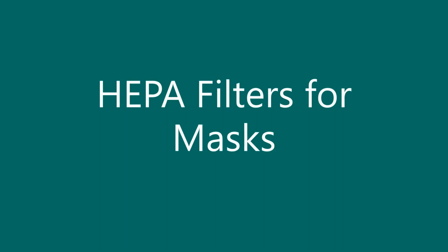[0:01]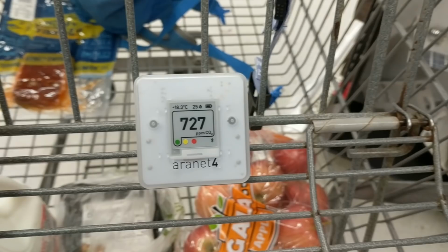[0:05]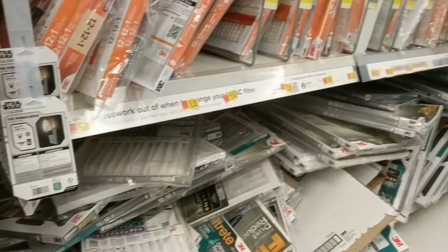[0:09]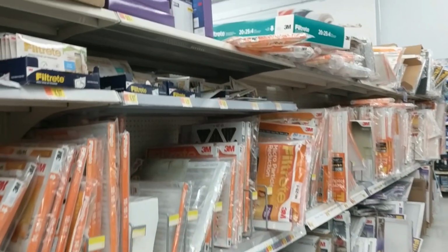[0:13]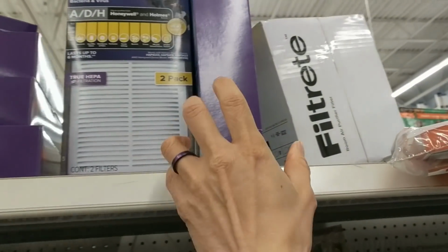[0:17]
I'm at the local big box store and CO2 is at under 800 ppm, which is acceptable. We're on the aisle with the HVAC filters. I am looking for a HEPA filter up here. I'm going to grab the biggest one.
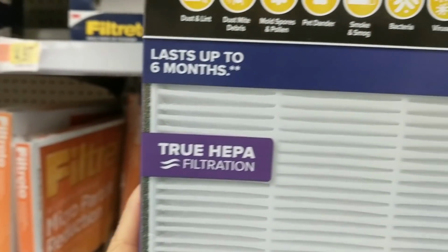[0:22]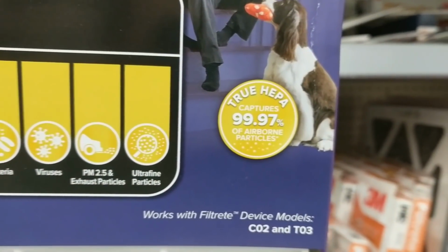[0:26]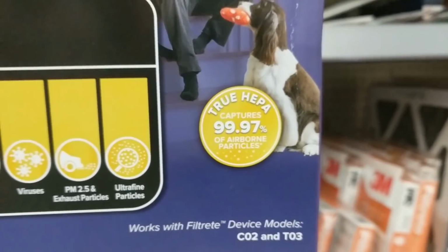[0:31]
It says true HEPA filtration, which means that it filters out over 99% of particles, including the ones of the size that are hardest to remove.
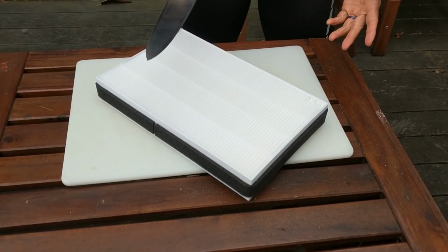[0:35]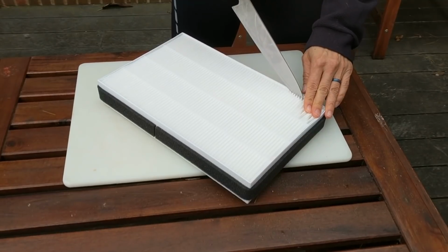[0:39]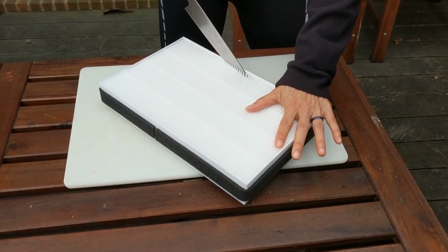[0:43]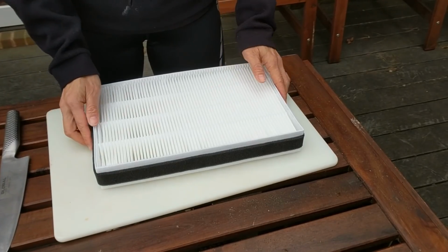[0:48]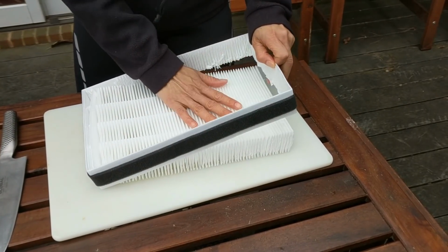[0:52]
So I'm going to try to cut the filter out of the frame. I'm sure there are better tools for doing this, but I grabbed a chef knife. It's what's handy. And I can kind of saw it out along the edge here, like that. I finished cutting it all the way around the frame, and now I'm going to get it out of there.
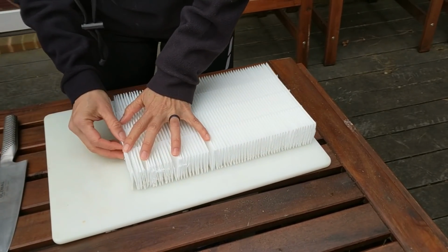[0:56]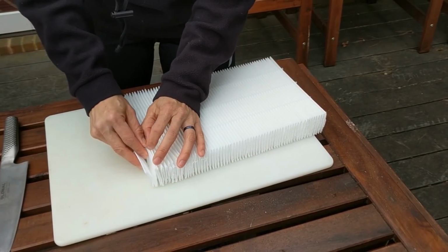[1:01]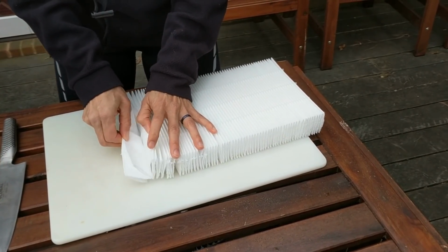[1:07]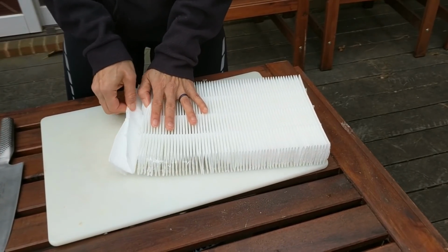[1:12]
And notice that it's pleated, and it's actually held together by these glue strips. And if I can carefully pull those apart, like that, and then the next step is we'll carefully pull off the glue strips.
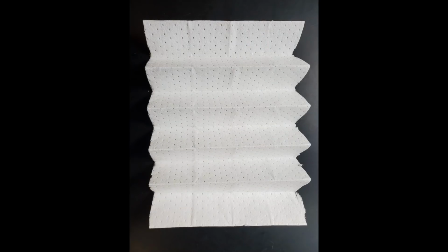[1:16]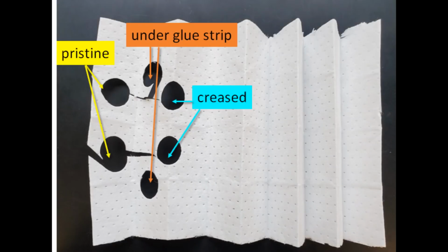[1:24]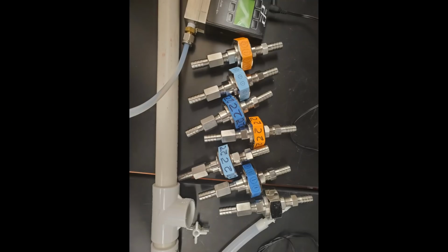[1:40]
I'd brought the filter into the lab and dropped it off with my PhD student, Jin Pan, who tested it. She cut out two pieces each from three different sections of the filter. The first was pristine parts of the filter, the second was across the creases where the pleats are, and the third was areas under where I had removed the glue strips. She mounted the filter pieces in our filter holders for testing.
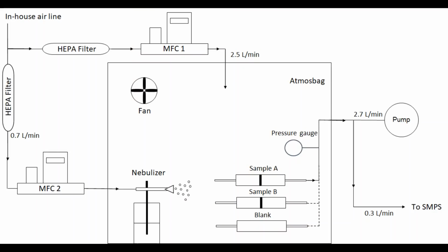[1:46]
This diagram shows our experimental setup. Briefly, we generate sodium chloride particles from a nebulizer, and we measure what passes through our samples, A and B, and also through a blank using a scanning mobility particle sizer.
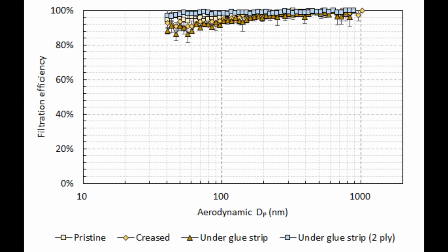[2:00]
Here are the results showing filtration efficiency as a function of particle size from about 40 nanometers up to 1000 nanometers, or 0.04 microns to 1 micron. Notice that the pristine filter was better than 90% efficient across all particle sizes. There was some reduction in efficiency for the pieces that were creased and under the glue strip. However, when we took two layers, even from under the glue strip where it had been slightly damaged, we have better than 95% efficiency across all particle sizes.
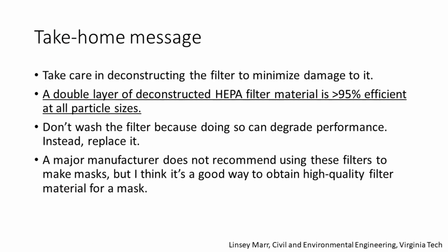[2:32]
Here's the take-home message from this demonstration. First, take care in deconstructing the filter to minimize damage to it. Second, a double layer of deconstructed HEPA filter material is greater than 95% efficient at all particle sizes, but you still need to ensure an excellent fit of your mask, and the filter material should span the entire area of your mask. Third, don't wash the filter because doing so can degrade performance.
Instead, replace it. And finally, a major manufacturer does not recommend using these filters to make masks, but I think it's a good way to obtain high-quality filter material for a mask. To my knowledge, these HEPA filters are not made of fiberglass. I believe they're made of a polypropylene or some other synthetic material.